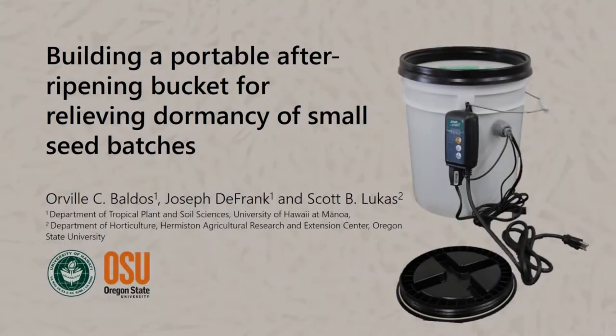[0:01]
Aloha, my name is Orville Baldos and I'm an assistant researcher at the University of Hawaii at Manoa. Today I'm going to share with you how to build a portable after-ripening bucket for relieving dormancy of small seed batches.
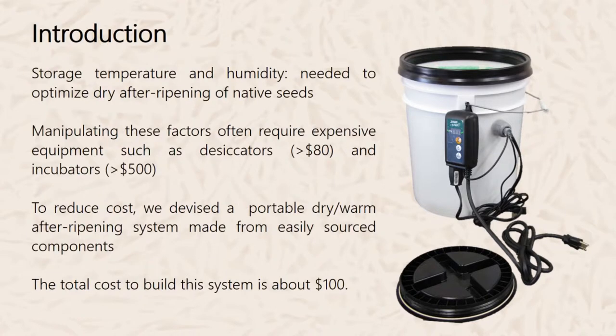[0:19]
One of the reasons why we built this after-ripening system is that in particular species that require dry after-ripening, control of storage temperature and humidity is very important. Manipulating these factors often require expensive equipment such as desiccators and incubators. So in order to reduce cost, we devised a portable dry after-ripening system made from easily sourced materials, which you can buy either at the hardware store or online. The total cost to build this system is about $100.
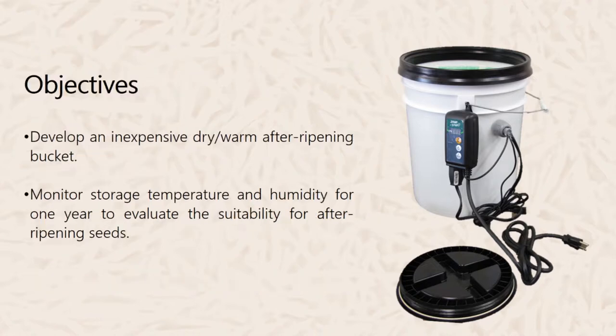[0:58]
So the objective of this study was to develop an inexpensive after-ripening bucket, and our second objective was to see if the storage temperature and humidity inside the bucket for 1 year would be suitable for after-ripening.
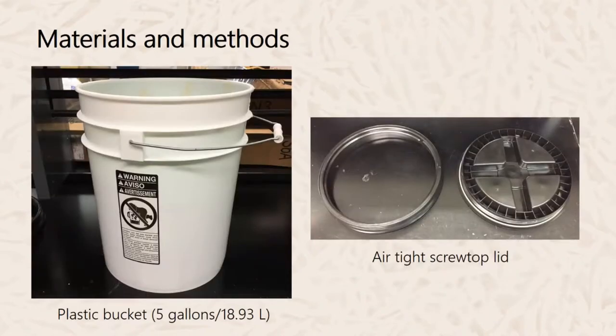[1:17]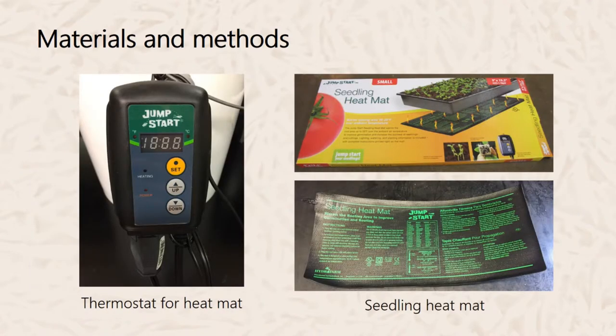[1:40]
So the materials that you'll need for this after-ripening bucket is a plastic bucket, which you can buy from a hardware store or online. Preferably use a 5-gallon bucket. And then you'll also need an airtight screw-top lid, which can be bought in specialty stores or online. Next, you'll have the heating element, which consists of the seedling heat mat and the thermostat that will control the temperature of the heat mat. These two can be bought in garden centers, or you can also buy it online.
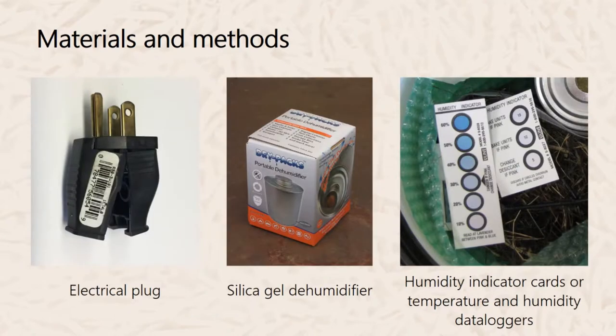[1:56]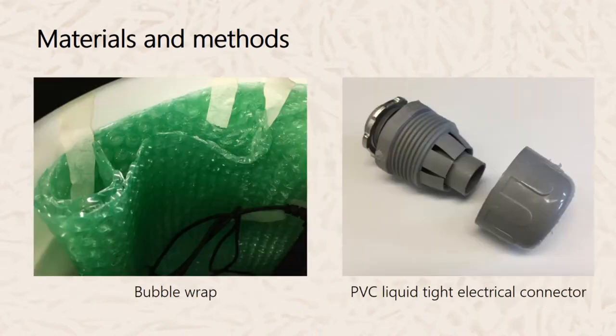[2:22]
Next would be electrical plug. You'll also need a silica gel dehumidifier, and also to monitor humidity or temperature, you'll need humidity indicator cards, or if you want a more precise monitoring of temperature and humidity, you may want to invest in a temperature and humidity data logger. Next would be bubble wrap for insulating around the inside of the bucket, and for putting in the wires, you'll need a PVC liquid tight electrical connector.
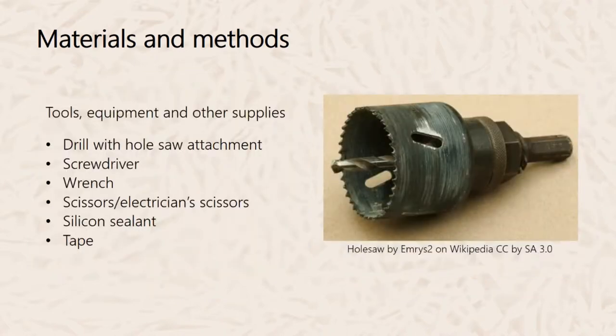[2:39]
Tools, equipment, and other supplies used for building this bucket, you'll require a drill with a hole saw attachment, a screwdriver, a wrench, scissors or electrician's scissors, silicone sealant, and tape.
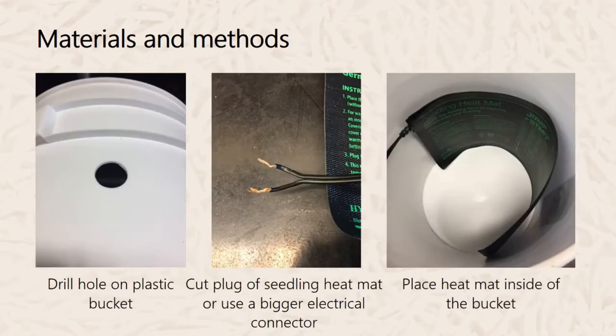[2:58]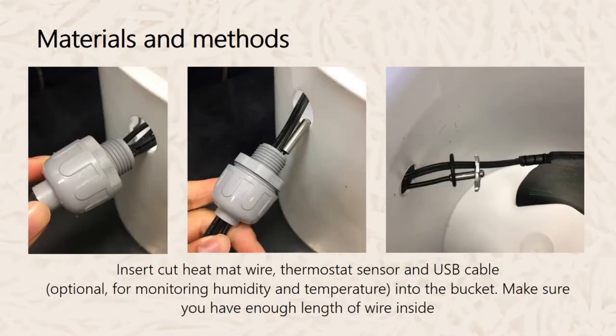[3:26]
So the first thing that you'll do building the system is to drill a hole in the plastic bucket. Make sure that when you drill the hole, it is just right to fit the electrical connector or the plug. If you are comfortable with cutting the plug of the seedling heat mat, cut it and expose the wire, and then place the heat mat inside the bucket. Put the wire into the hole and into the electrical connector, and also wire the thermostat sensor and USB cable into the bucket. So here we used a USB cable because we're using a USB-based data logger. So the USB cable is an optional thing.
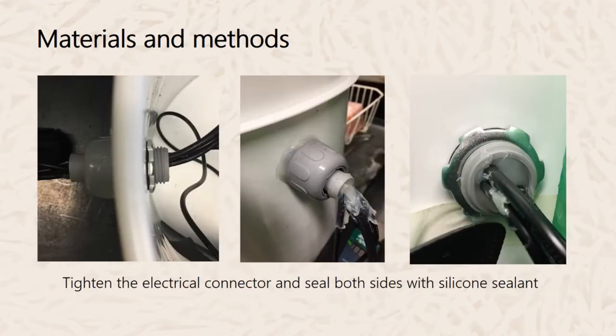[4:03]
So before tightening or sealing anything, make sure that you have enough length of wire inside of the bucket so you have play with the sensor or the heat mat or the USB cable. So once you have the desired length, tighten the electrical connector and seal both sides, including around the electrical connector, with silicone sealant.
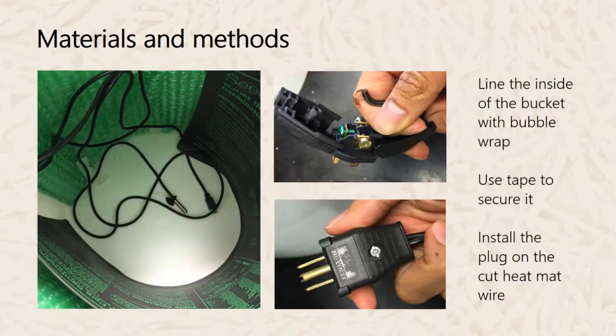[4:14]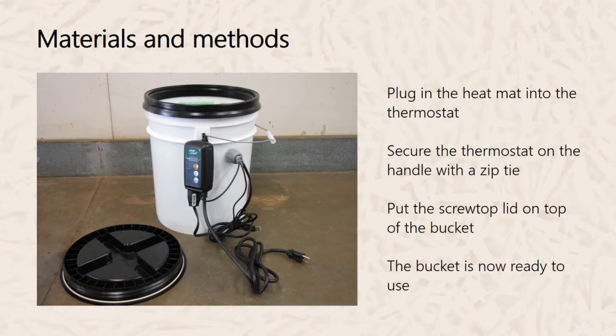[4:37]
So once that seal is dry, line the inside of the bucket with bubble wrap and secure it using tape. So by lining the bubble wrap inside the bucket, you'll insulate the seedling mat. So once that's in, install the plug into the cut heat mat wire, and then plug this into the thermostat. Secure the thermostat on the handle of the bucket with a zip tie, and then put the screw top lid on top of the bucket. So once you've done this, the bucket is now ready for use.
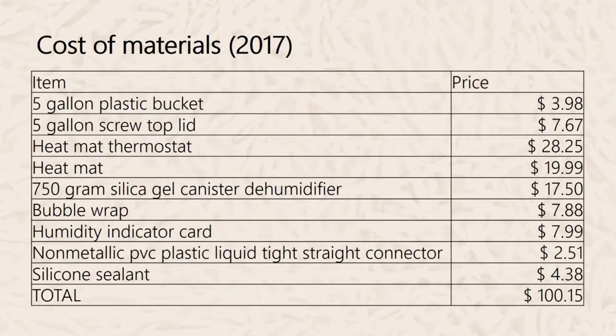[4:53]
So this is just a breakdown of the cost of materials as of 2017 for this bucket. You'll need a 5-gallon plastic bucket, which costs around $4. A 5-gallon screw top lid, about $7. The heat mat thermostat, about $28. The heat mat, about $20. The 750-gram silica gel canister, the dehumidifier, which is about $17.50.
Bubble wrap, which is about $7.88. The humidity indicator card, which is about $7.99 for a pack of, I think, 100 or 500. A non-metallic plastic PVC electrical connector, which is about $2.51. And then finally, the silicone sealant, which is about $4.38, totaling about $100.
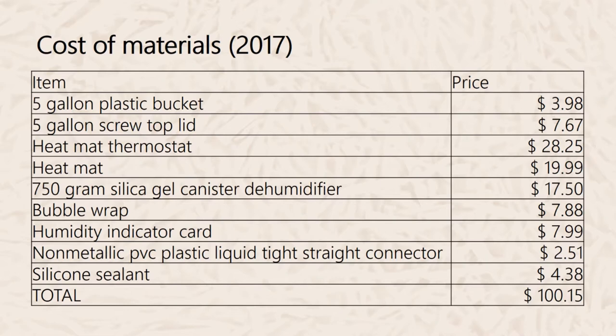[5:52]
If you're planning on using data loggers, that would be a little bit more expensive. So you add about $150 to the base price of $100. So if you have a data logger, the whole system will cost around $250, which is cheaper than the more precise desiccators or incubators.
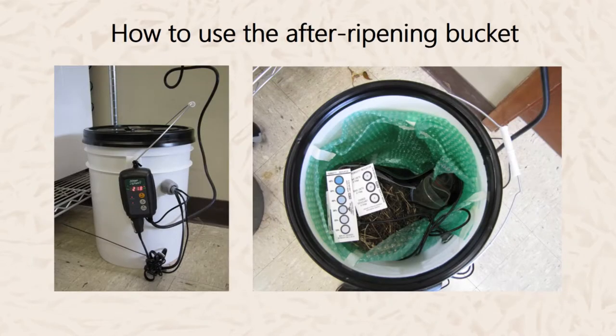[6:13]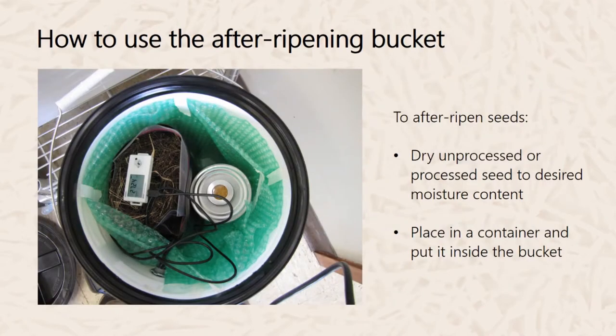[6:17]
So how to use the after-ripening bucket? Before you place your seeds inside the after-ripening bucket, I would suggest you dry your processed or unprocessed seed to the desired moisture content. The desired moisture content is the moisture content that's optimum for dry after-ripening. Then once it's dried, place it in a container, preferably a paper bag or maybe a plastic bag, and then put this inside the plastic bucket.
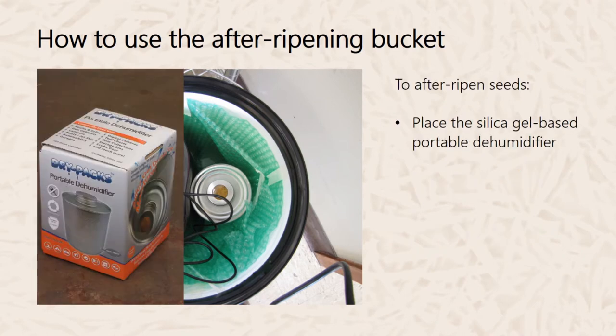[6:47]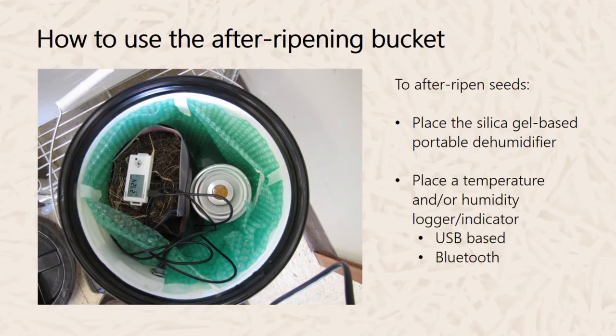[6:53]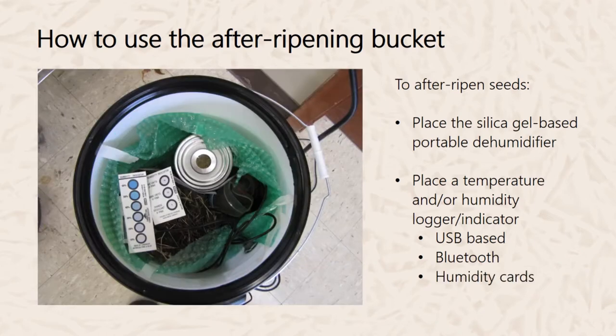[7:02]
Once you have your seeds in, place your silica gel-based dehumidifier inside and place your temperature or humidity monitoring system, which can be either a USB-based data logger or a Bluetooth-based data logger, or for the most basic monitoring system, you can use the humidity card. The only downside with the humidity card is that when you want to see what the moisture content is inside of the bucket, you'll have to open the bucket every now and then.
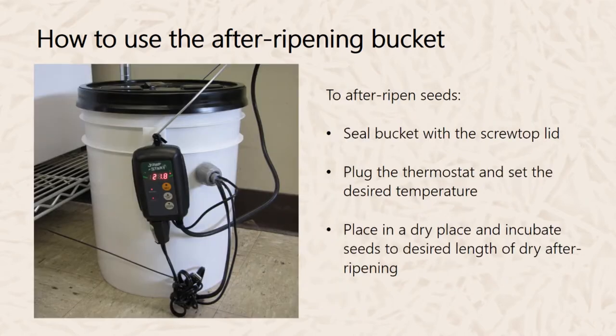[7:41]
One workaround that I would suggest would be to make a transparent window on the side of the bucket, but make sure that this window is airtight. This window serves as an area where you can look at your humidity indicator and see the humidity inside without opening the bucket. So once your desiccant and seeds are inside, seal the bucket with a screw top lid. Plug in the thermostat and set the temperature to your desired after-ripening temperature. And then place the bucket in a dry place and incubate to the desired length of after-ripening.
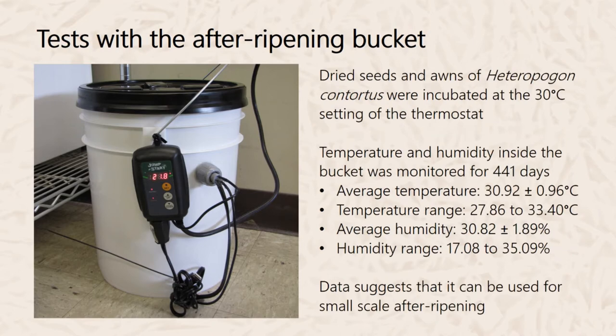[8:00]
We did some tests with this after-ripening bucket to see if the conditions inside are suitable for dry after-ripening. For testing, we used dried seeds and awns of Heteropogon contortus, and we incubated these at the 30 degrees Celsius setting of the thermostat. Temperature and humidity inside the bucket was monitored for about 441 days, and we got an average temperature of 30.92 degrees Celsius, plus or minus a degree, with the temperature ranging from 27.86 degrees Celsius to 33.4 degrees Celsius.
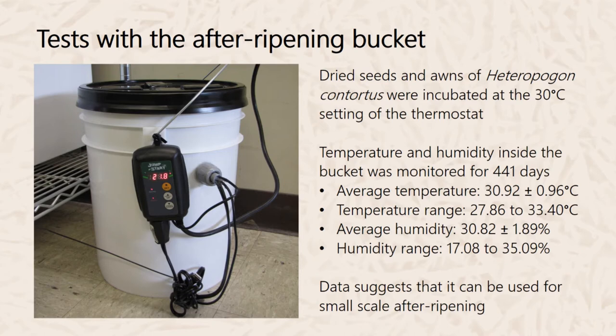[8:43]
Average humidity was measured at around 30.82%, plus or minus 2%, and the humidity ranged from 17.08% to 35.09%. So the temperature and humidity data that we collected from this bucket suggests that the conditions inside the bucket are amenable for small-scale after-ripening.
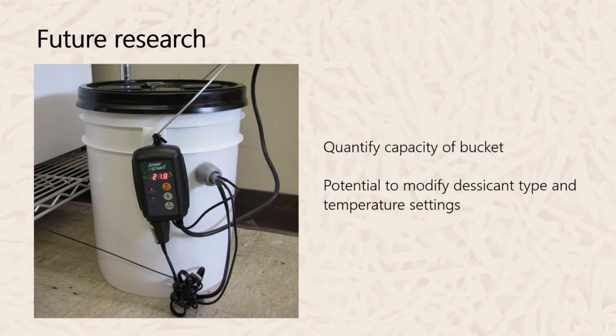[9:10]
Future research for refining this system would be to look at the capacity of the bucket, like how many seeds can be placed inside for optimum after-ripening. And also looking at different desiccant types, maybe something like a saturated salt so that the humidity would be maintained over time, and also looking at different temperature settings for different species.